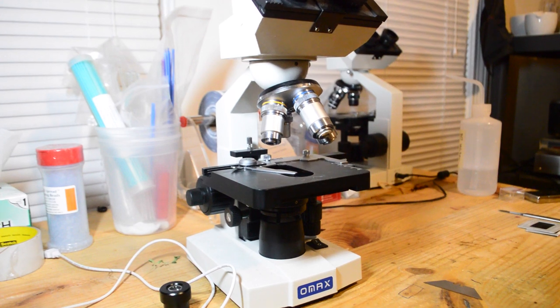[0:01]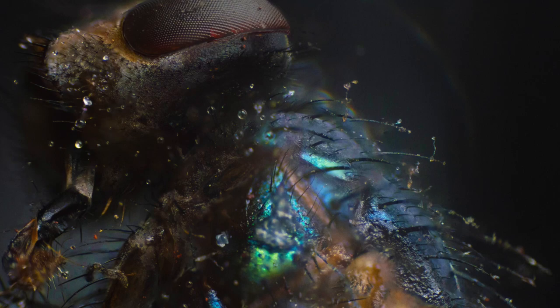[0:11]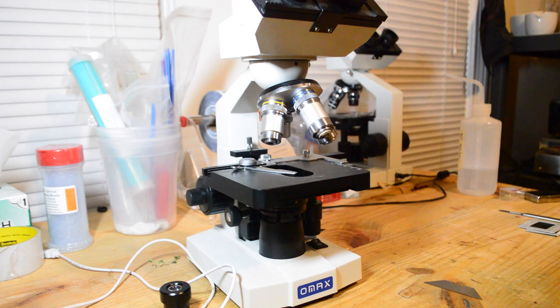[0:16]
If you go to buy a microscope, chances are you're going to get this or a similar model. I'm constantly surprised at just how high quality of a microscope that you can get for all of 150 bucks, but the low price tag does come with some caveats. Primarily, these scopes are pretty feature poor and can only do basic things.
For most people, that's probably totally fine, but if you're really serious about science, more functions expands the phenomena and material properties that you can investigate. To buy a microscope with features like polarimetry or dark field capability, the price would easily be double that of one of these plain microscopes. But if you know a little bit about optics and how these kind of microscopes work, it's actually super easy to upgrade one of these cheap microscopes to do the same sort of thing.
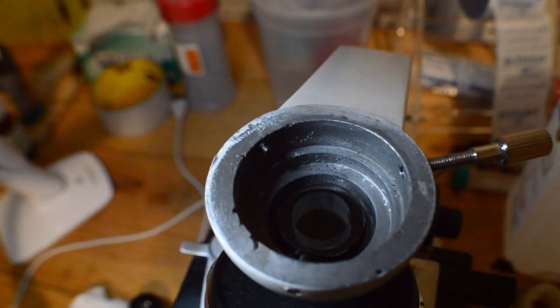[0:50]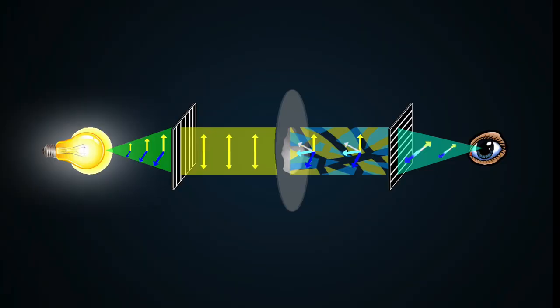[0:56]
Obviously, the more time you spend modding your microscope, the better your results will be, but I'll show you what you can do with all of 10 minutes and $5 worth of materials. Before we can mod our microscopes, we need to understand what polarimetry is and how dark field images are made. We'll start with polarimetry. A basic polarimeter has three pieces: two polarizing filters, and the item to be analyzed.
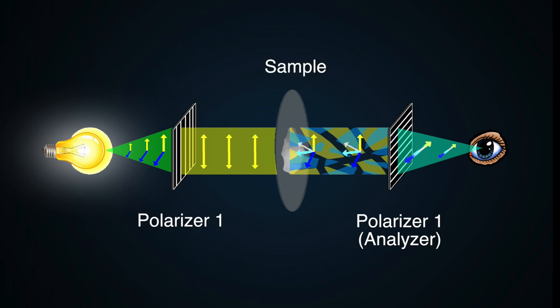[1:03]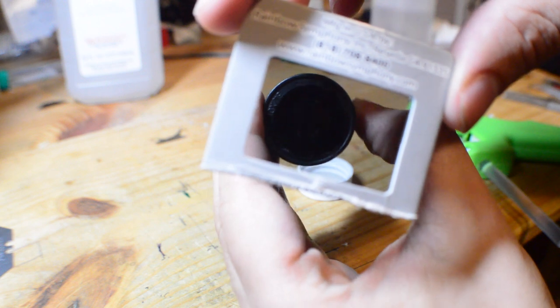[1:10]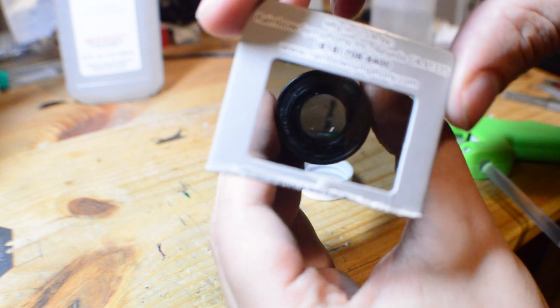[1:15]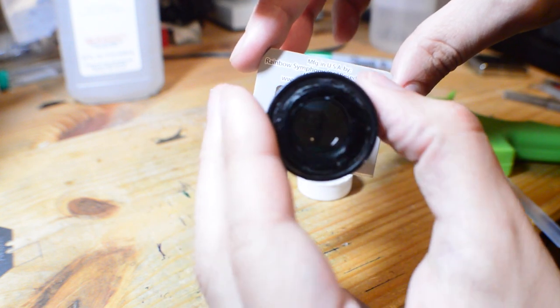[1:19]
Polarizers really need their own video to explore the ins and outs of how they work, but in short, they have few properties that make them useful in this setup. First, if two polarizers are turned 90 degrees to each other, you can see that the amount of light transmission drops to almost zero. This is because these filters only let light with similar polarization through. Polarization refers to how the electromagnetic fields of a photon are oriented and moving through space. Photons passing through the first filter that aren't already polarized are sort of twisted so that the field lines line up with the filter's orientation. I'll explore how this works in a later video, as it's really cool in and of itself.
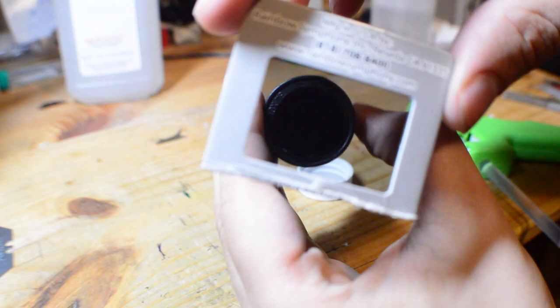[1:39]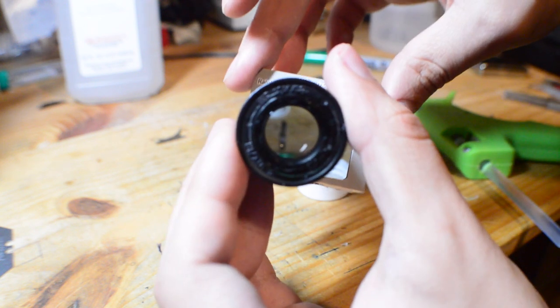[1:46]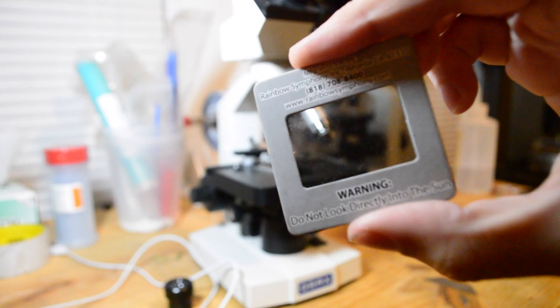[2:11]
Now, if we put a second filter in front of the newly polarized light, we see that the more we rotate it relative to the first filter, the less light is able to get through. Now, if we set both polarizers perpendicular and then put something in between, due to a property called birefringence, the polarization of photons passing through certain places is twisted again, which changes its ability to pass through the second filter. Only light that is twisted makes it through the second filter. To us, this ends up looking like a color change, as different colors are blocked differently as the polarization is twisted around. To see this for ourselves, we can quickly modify our microscope with two polarizing filters.
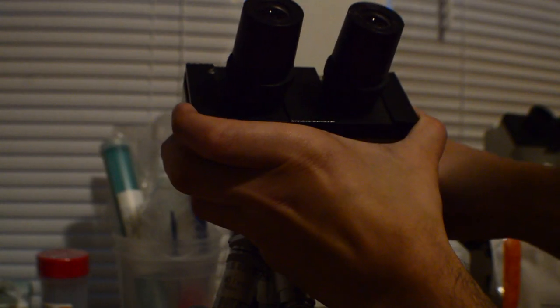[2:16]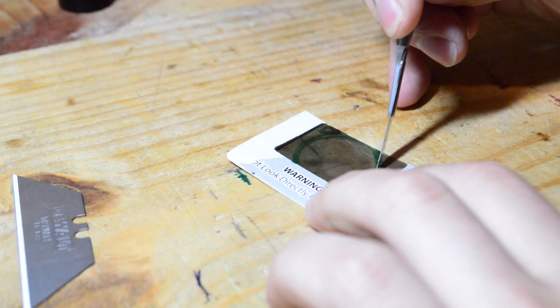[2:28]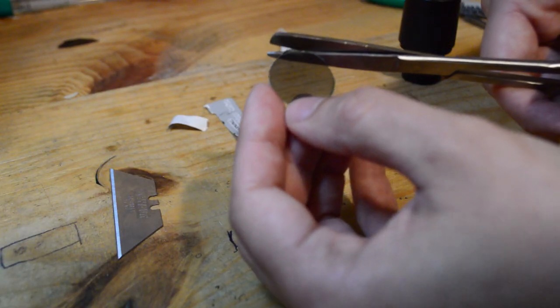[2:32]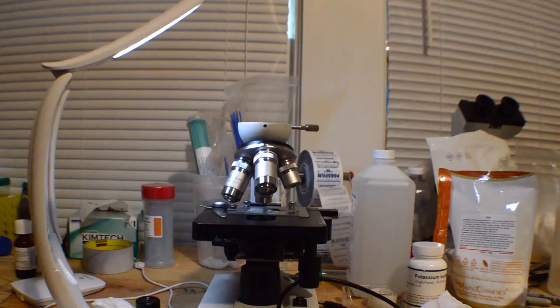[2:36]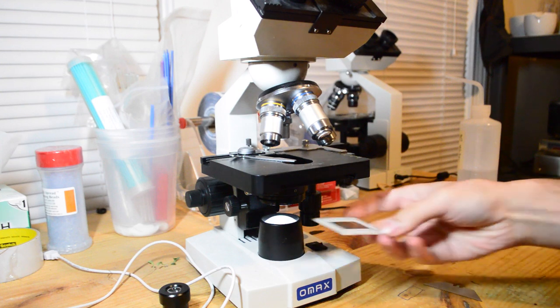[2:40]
The way I found this works best is to first unscrew the top part of the microscope so the ocular assembly comes off. Then, using one of the lenses as a template, since it's basically the right size, trace the outline onto one of the polarizers, then start cutting it out. You may need to gently peel apart the cardboard mount to expose enough of the polarizing film. Then place the film onto the lens of the microscope neck and replace the top section. Then just place the second polarizer over the light source. You'll want to leave the second polarizer free-floating, as you'll need to be able to rotate it.
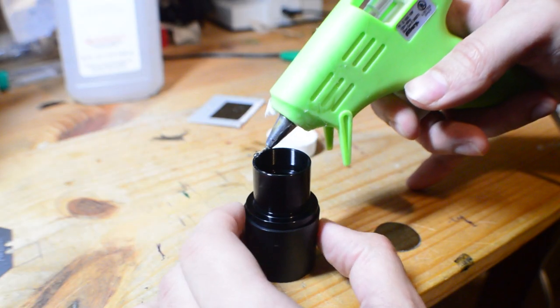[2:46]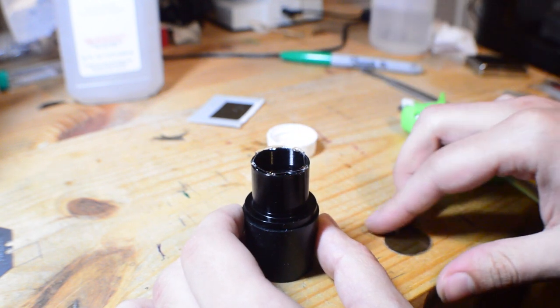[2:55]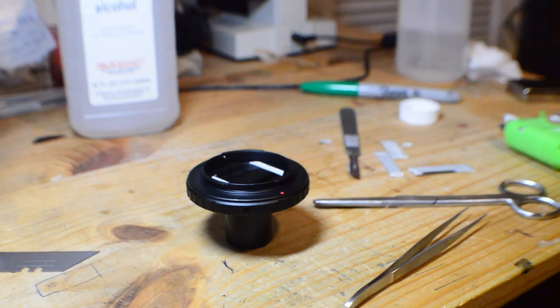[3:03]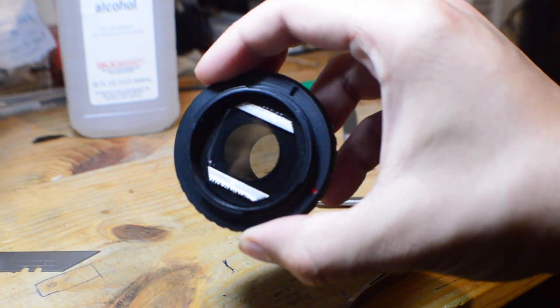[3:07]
When I was first trying this, rather than putting the top polarizer where I just showed you, I tried mounting it directly onto the eyepiece, but this didn't actually work very well. The polarizer needs to be further down the optical train for the effect to work properly. However, it did let me show that the polarizers are definitely in place, as I can darken the view by turning the eyepiece. The other nice thing about putting the top polarizer where it is is it means you don't need to modify any camera mounts.
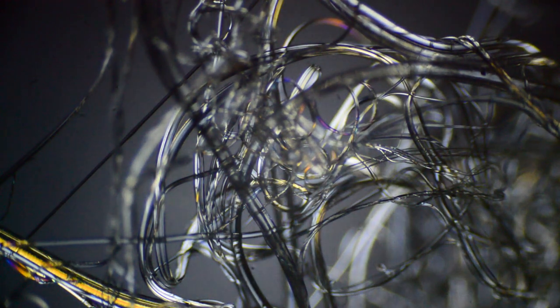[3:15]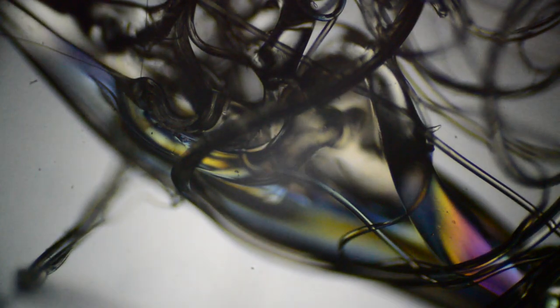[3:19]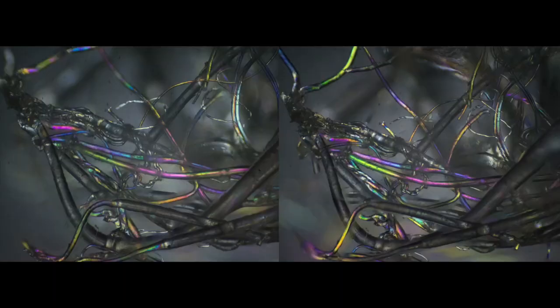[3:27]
Since I'd been using the hot glue gun for this project, I already had a collection of glue webs and thought they'd be the perfect first test subject. And I wasn't disappointed. Look at how colorful that is. What we're seeing is the stresses in the crystal structure which change the birefringent nature of each strand, and in turn, the colors. And as I rotate the sample, you can see that the colors change clearly. I took two focus stacked images of the same structures but at 90 degrees to each other, and it's cool to see the radical difference in colors.
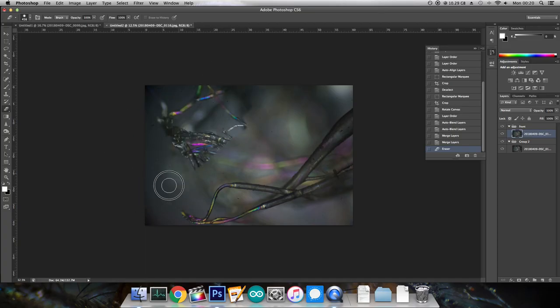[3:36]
If you want to see how to make photos like this, be sure to click the link in the description to my earlier video. Before we look at more samples, let's quickly look at another mod, which is adding a dark field. All this really means is making it look like the sample has a black background.
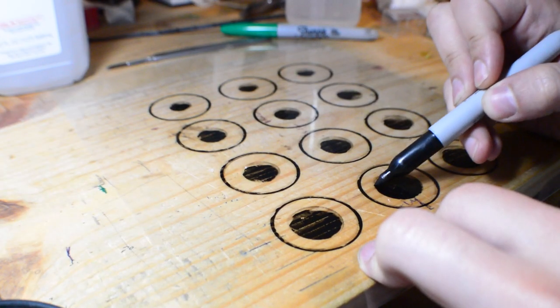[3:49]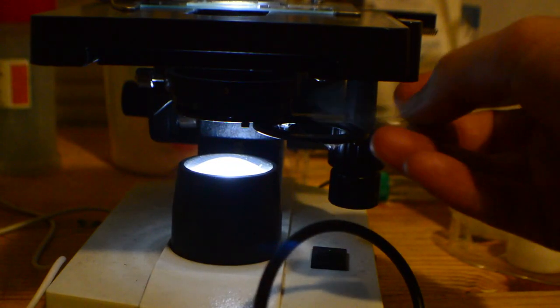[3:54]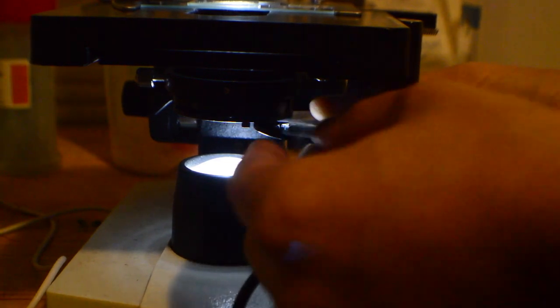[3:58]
For this mod, all we have to do is make an opaque dot on a clear piece of plastic and insert it into the filter holder in the bottom of the microscope. And we need it to be just smaller than the aperture.
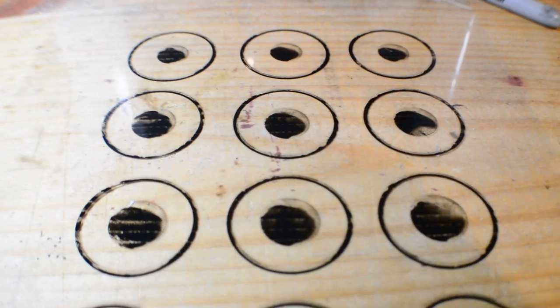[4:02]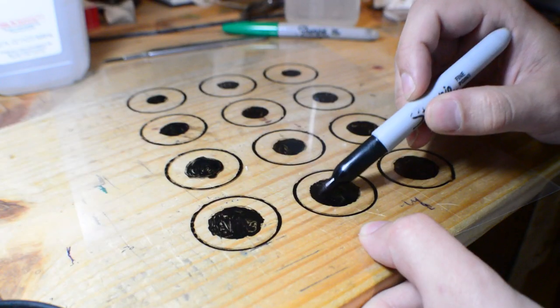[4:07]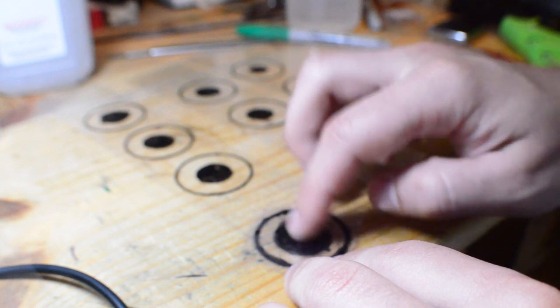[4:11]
Originally, I tried printing out a variety of sizes on overhead projector film, but because I don't have a laser printer, it just made a giant mess. I tried coloring it in with Sharpie and stacking several to block out most of the light, but the results were a bigger mess and didn't even work well.
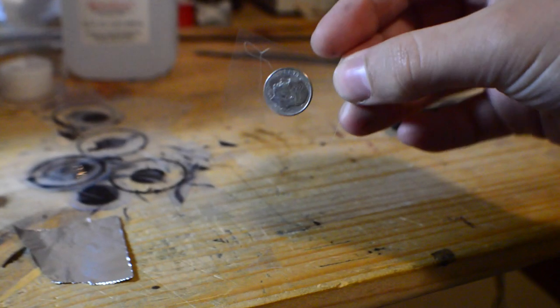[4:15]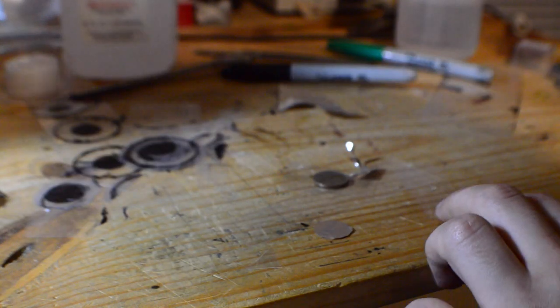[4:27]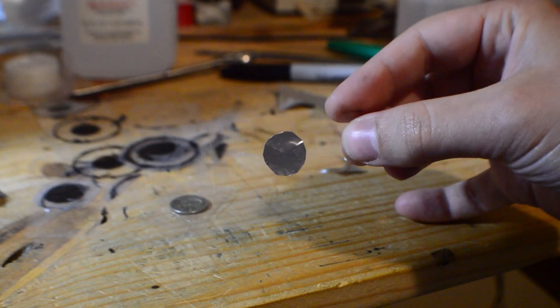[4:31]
As I was experimenting with this and trying to get it to work, I realized that a dime was about the size that I needed, so I glued one onto some more of that clear transparency film and tried that. It almost worked, but it was still a little bit too big, so I switched to aluminum foil so that I could easily trim it to the size I needed, and this actually worked really well.
So why does this work? Well, it's a bit of an optical trick that uses the fact that a decent microscope has a little lens underneath the sample to focus the light onto it. By blocking the middle part of the light before it gets to that condenser lens, when the light is focused onto the sample, there's still more than enough to illuminate it, but the direct light is gone, giving it the black background effect that we want.
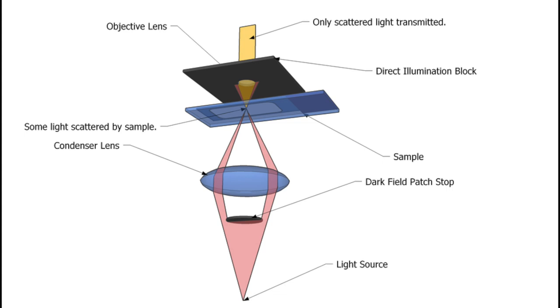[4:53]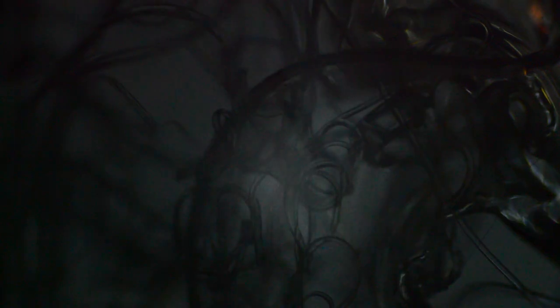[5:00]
It's really just a way of turning down the brightness in a really clever way, so you do lose a lot of visibility, hence why you need to adjust the size of the dot. You're threading the line between blocking out enough light and blocking out too much. I should also note that with this setup, you can't do dark field and polarized at the same time, but the polarizer basically has a dark field effect built in, so that's okay.
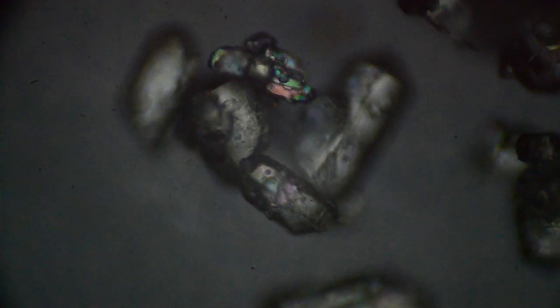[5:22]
Okay, let's start looking at stuff and see this setup in action. First up, some monopotassium phosphate crystals. Off the bat, these look pretty cool, but I thought it would be better if I exposed more crystal structure, so I dissolved some in water and let it evaporate and recrystallize.
While that was drying, I decided to try looking at some living samples. The first thing that jumped out was that some minerals that were otherwise impossible to see before now looked like they were almost glowing. But it really got cool when I found a nematode. In plain light, you see one set of detail, but in polarized light, it's a totally different set of detail. Honestly, I wish I had this mod installed when I made my last week's video. I feel like it would have made it so much easier.
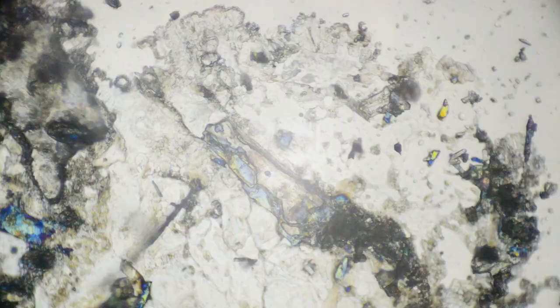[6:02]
Once the potassium phosphate had dried, I loaded it into the microscope, and it was way more colorful than before. Just like with the hot glue, you can see different areas change color as you move it around. Some areas go from incredibly vibrant to totally dull with only a few degrees of change.
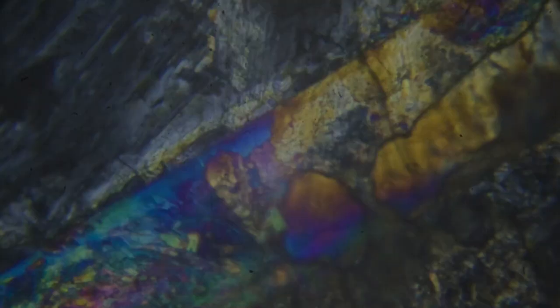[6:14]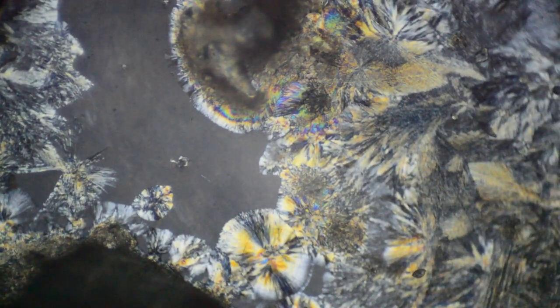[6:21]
So beyond this looking cool, why is this a useful thing to do to a microscope? Well, as you can tell, it offers a way to see hidden detail that you otherwise couldn't. And if you're into geology, it's a great way to make different minerals show up under a microscope so you can ID them or even notice that they're there.
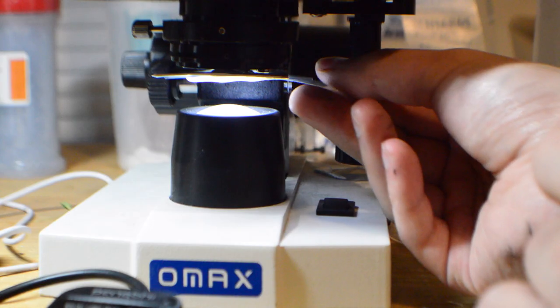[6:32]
Polarimetry is also used in places that aren't microscopes. Astronomers use it to measure the direction of magnetic fields in faraway galaxies, and radar uses it to tease out fine details of landscapes. So those are two simple mods you can make to a microscope to give all sorts of new functionality.
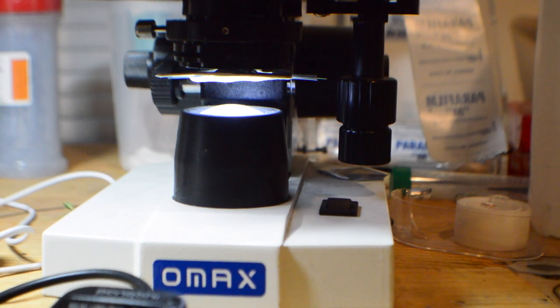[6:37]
I had a lot of fun filming this, as the colorful slides are really quite cool to look at, so if you've got a microscope, spend a couple of bucks on a set of polarizers and give this a try. If you do, send me your favorite images on Twitter, I'd love to see them.
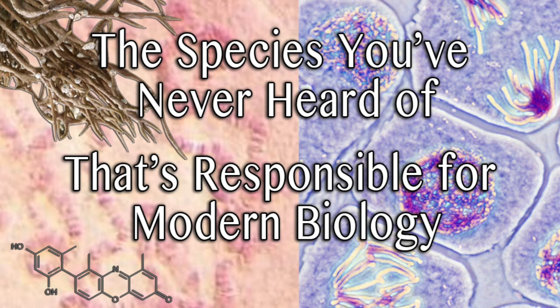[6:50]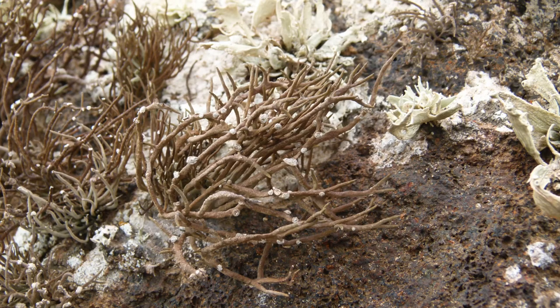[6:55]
If you like this video, be sure to check out last week's video where we also did some more microscopy and examined how a weird species of lichen provided the dye that paved the way for almost all of modern biology and the discovery of so much about the workings of the cell.